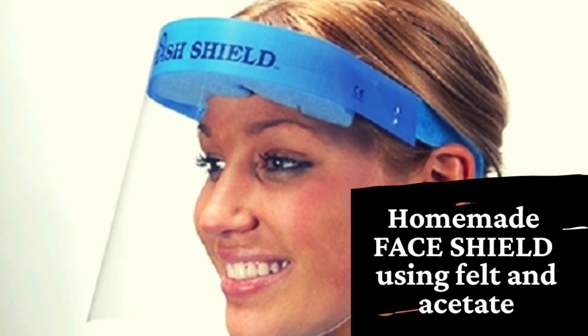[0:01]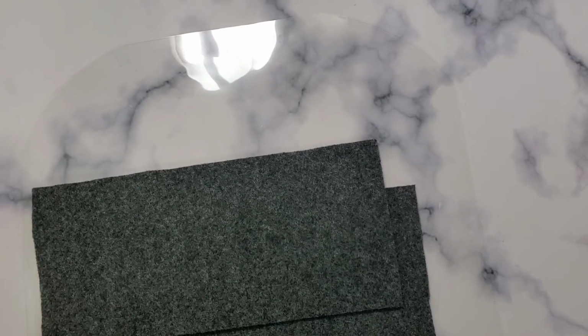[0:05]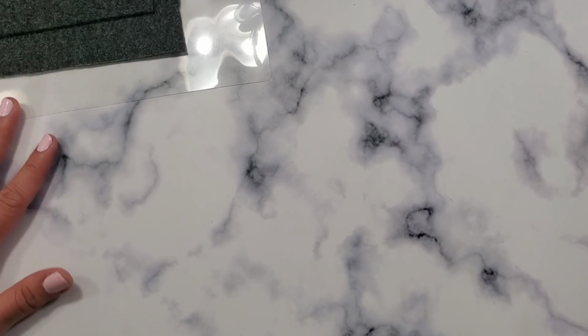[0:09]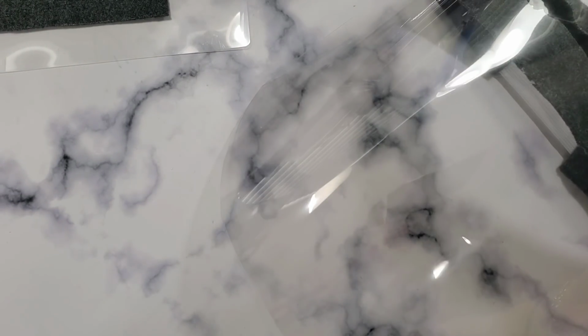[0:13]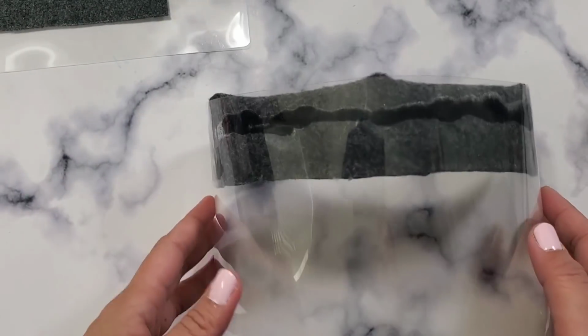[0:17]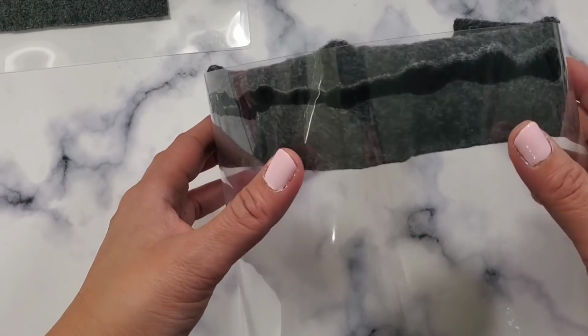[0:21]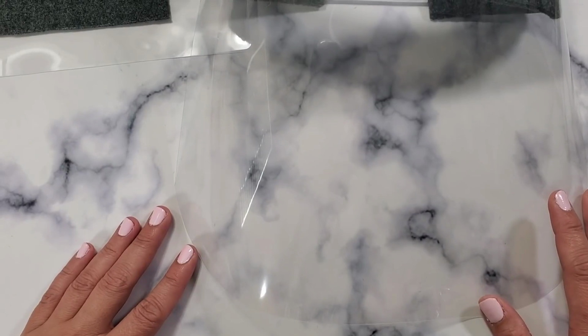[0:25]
Today, we are making a different kind of video. Not very crafty, but I think this is essential for us to know how to make. So we're gonna be making face shields. I know we ran out of face shields in my hospital, and some of you nurses who want to create your own face shield, we're gonna be doing that today.
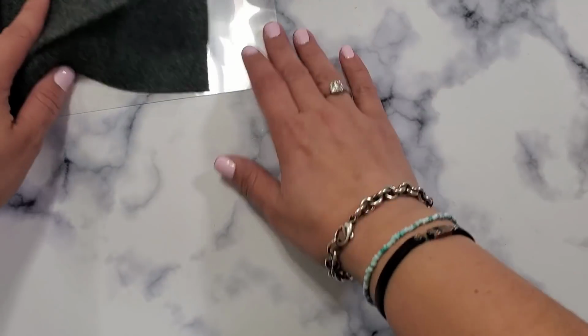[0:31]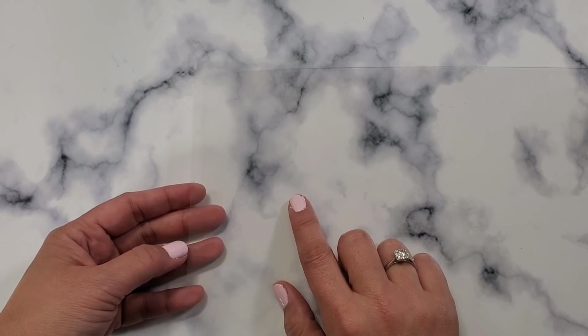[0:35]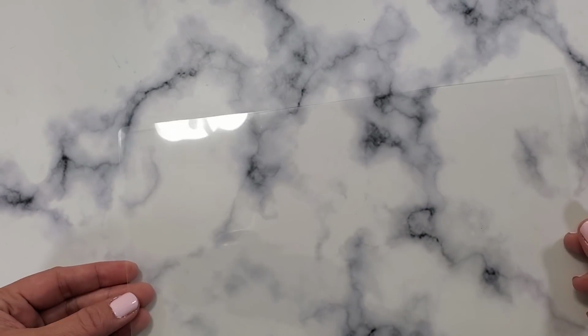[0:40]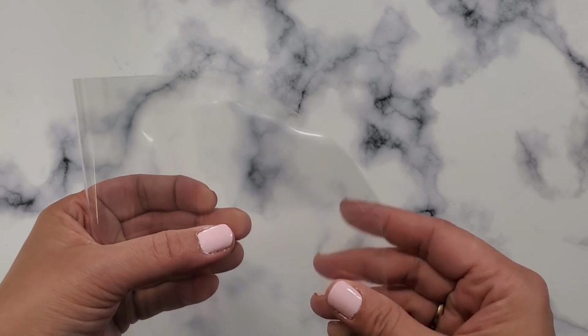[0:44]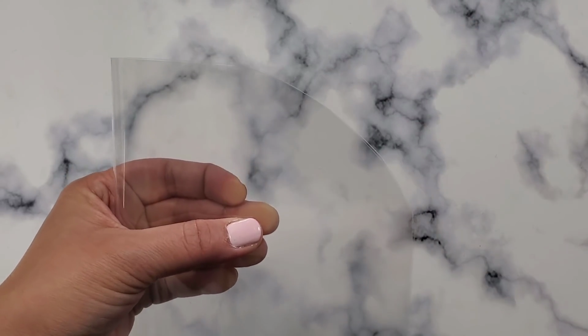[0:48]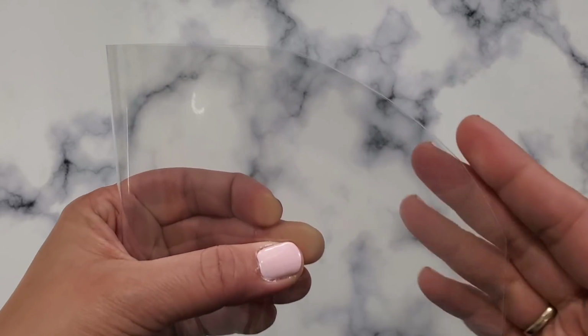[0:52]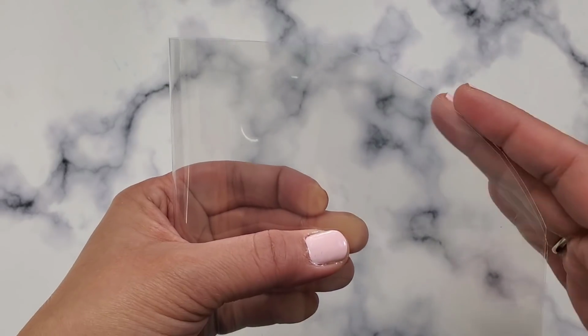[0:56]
So you're going to be needing acetate sheet. This is an acetate sheet. 5 mil is recommended because it's thicker. And then go ahead and laminate that. And then after you laminate it, make this curve right here. Just manually cut it on the curve just so it helps with the face, so it doesn't go to the side of your face or your t-shirt.
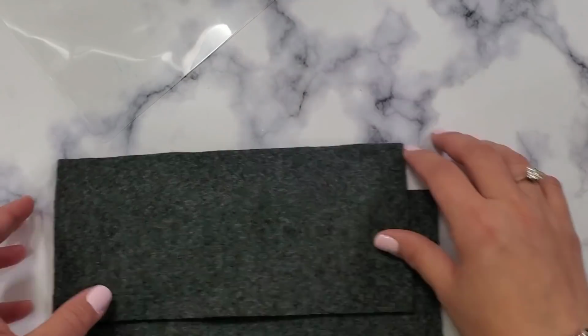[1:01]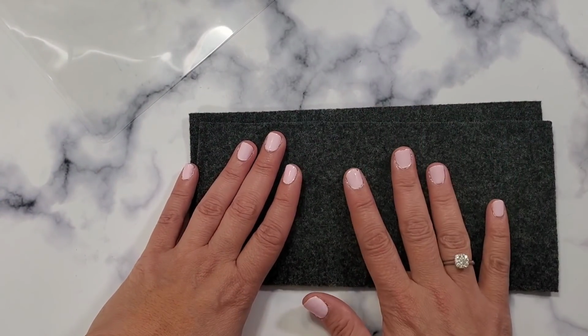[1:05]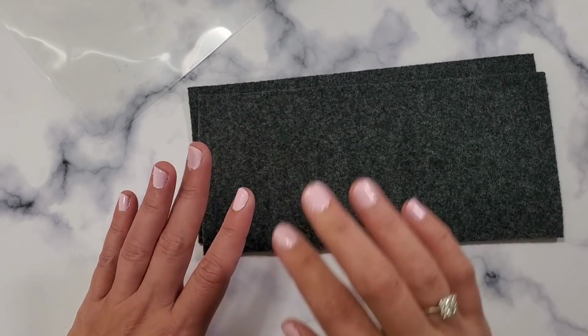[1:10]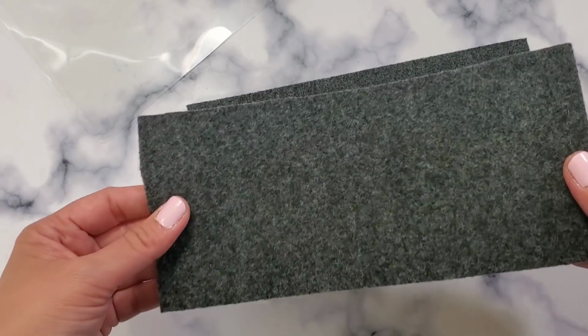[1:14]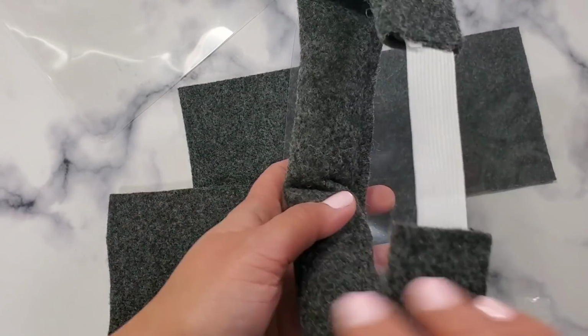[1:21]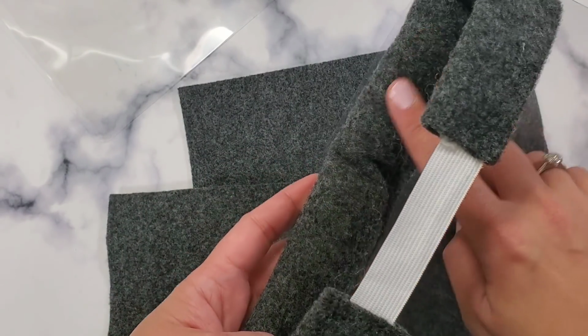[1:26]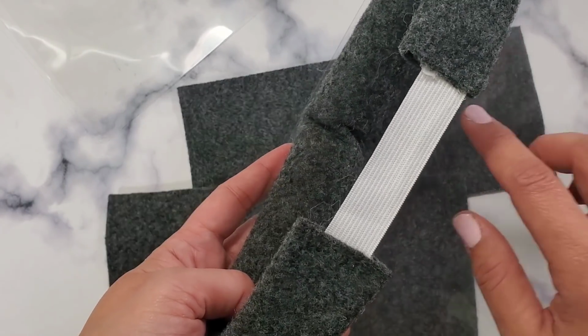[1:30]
And then you're going to be needing 2 felts. This is the material that I have right now. I don't have the luxury of getting picky with the materials. This is what I have at home, so this is what I used. So this is 2 sheets of 4 by 9. One of the sheets we will be using, because there's 2 parts here. One is this one that we're going to put fluff in, so that when it holds onto the head, you have the distance from the mask and it allows your nose.
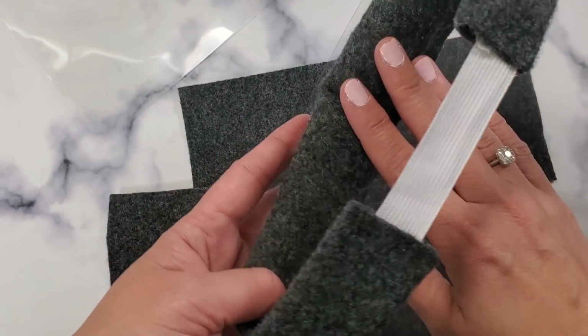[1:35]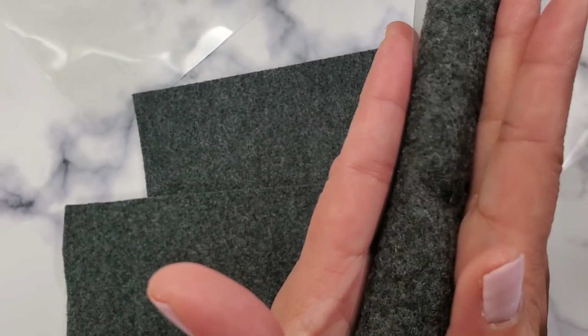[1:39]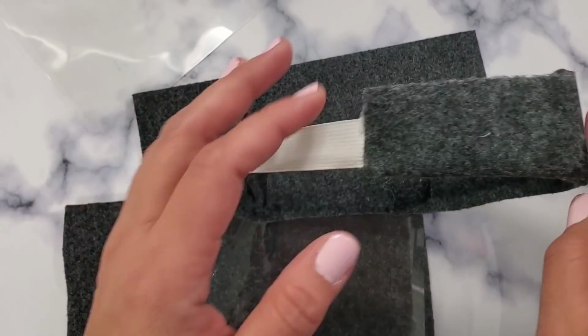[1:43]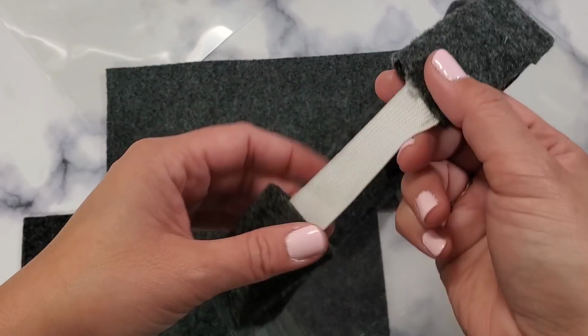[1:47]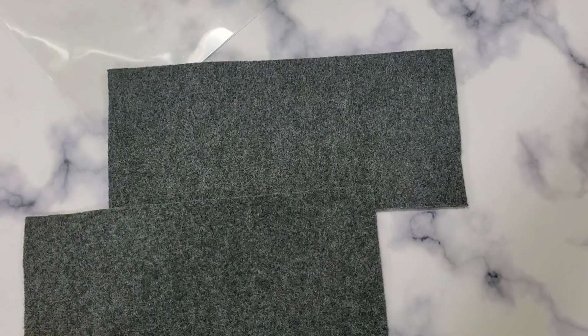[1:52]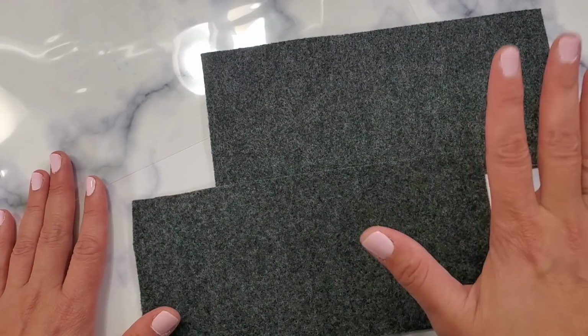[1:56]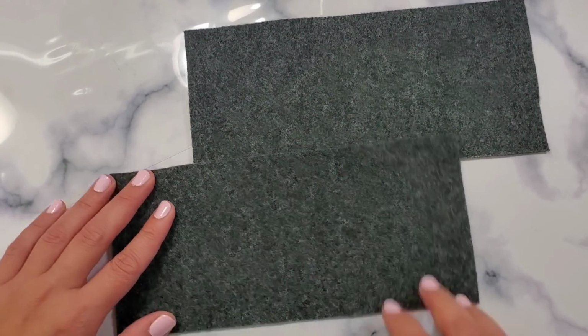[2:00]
So you need this to have fluff in it. So that's what we're doing. We're just doing the minimum. And then after that, the other part would be this one that holds the garter. So we're going to be doing that today. You don't have to know how to sew. We're gonna just use a basic glue gun because I think everybody has access to a glue gun. So let's do that right now.
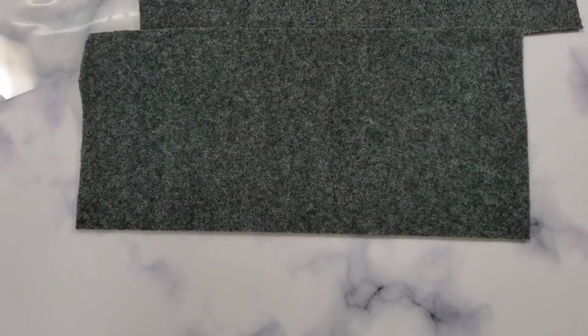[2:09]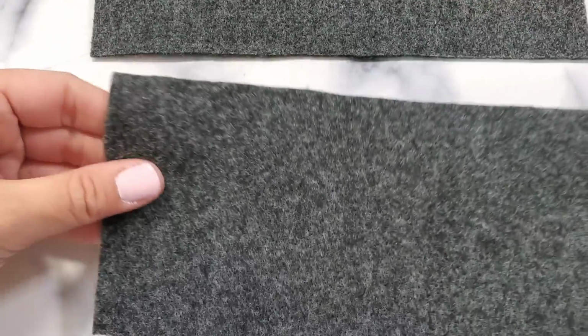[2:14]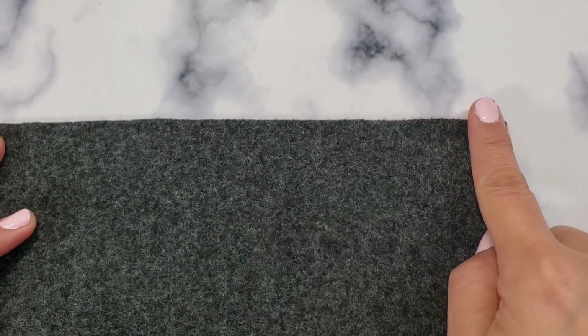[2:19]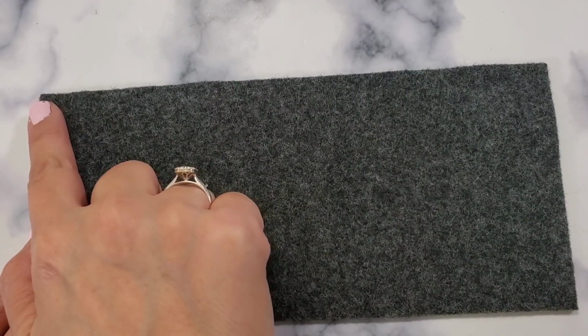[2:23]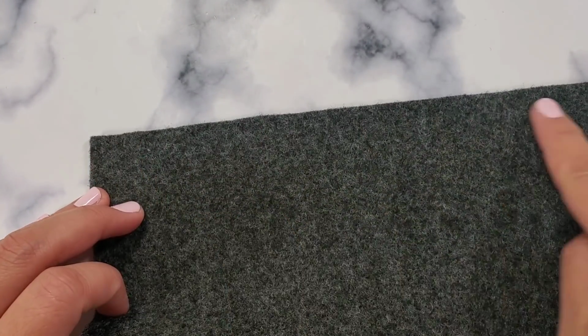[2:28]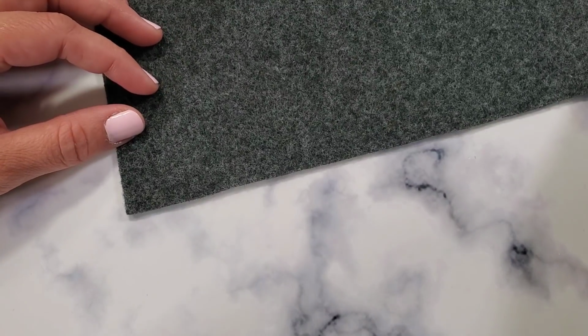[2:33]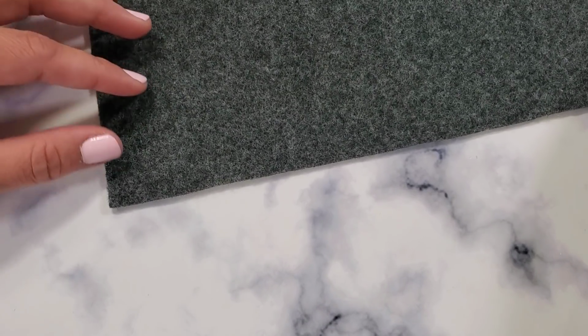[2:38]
We're gonna start with, this is the 4 by 8, right? Let me move you a little bit closer so you can see what I'm doing. So this is your 4 by 8 sheet, 4 by 9, sorry. This is 9 and this is 4 inches. So what I need for you to do is close this up just like this, and then you're gonna put your glue right here. So we're gonna do that right now just so you can see what I'm doing, and then you can do this if your hospital runs out of face shields. You can easily do this.
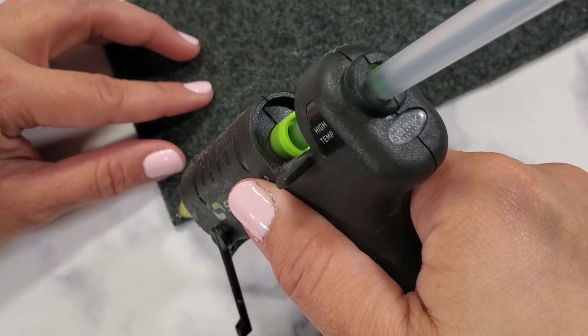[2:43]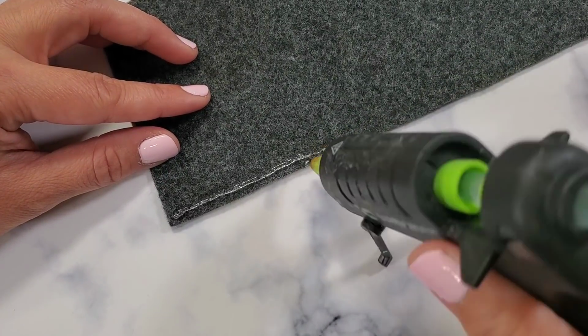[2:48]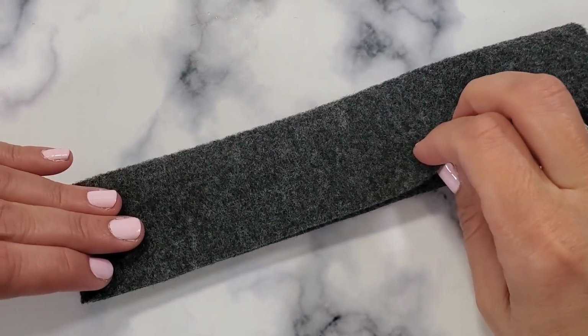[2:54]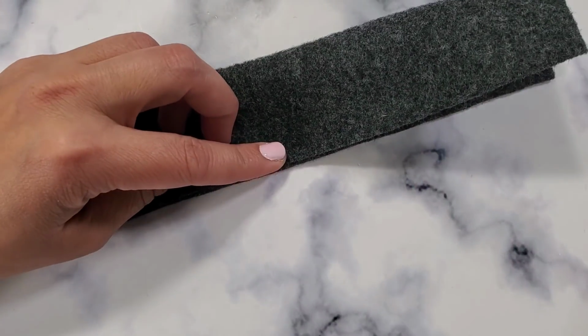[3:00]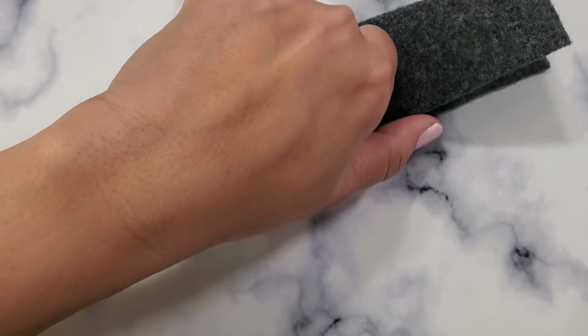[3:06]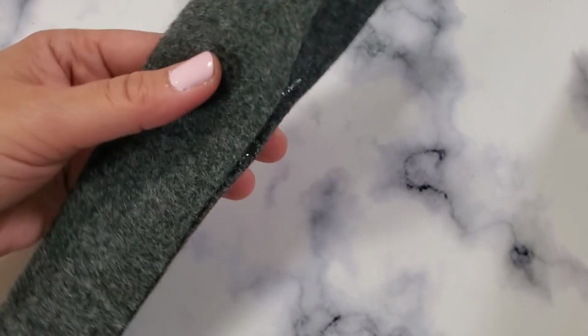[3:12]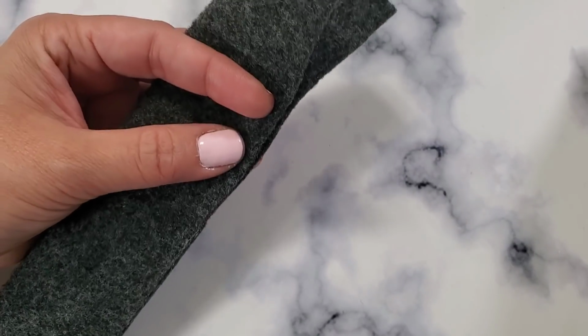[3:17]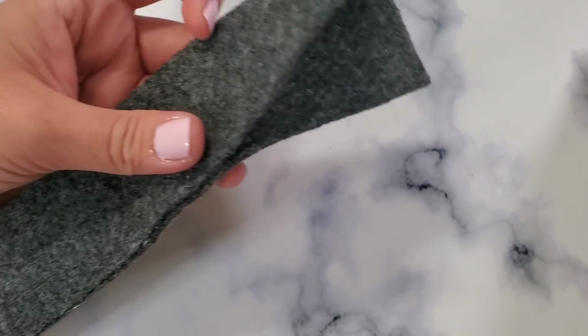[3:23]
All you need is glue gun, felt, garter, fluff, and acetate. I know that sounds a lot, but I think in times of crisis, we have to be quite resourceful so that we can protect ourselves. So for some of you guys who don't know, the face shield, you need it so that you can protect your eyes from the droplet. So the masks protect your nose and protects you from breathing in the virus. But the mask doesn't protect your eyes, and you can still get the virus in your eyes. So this face shield helps you with that.
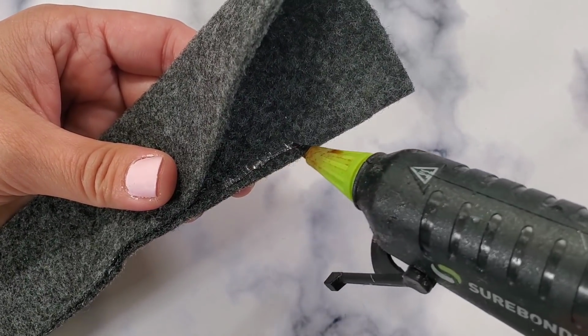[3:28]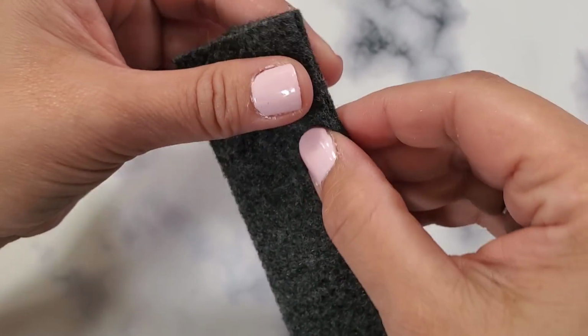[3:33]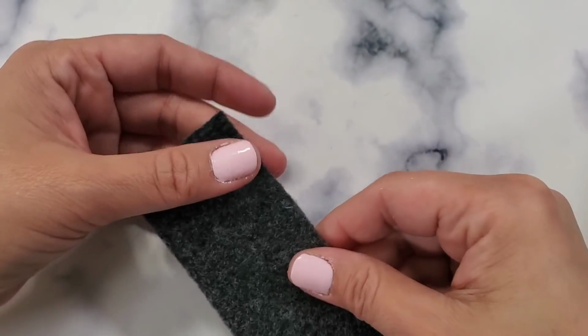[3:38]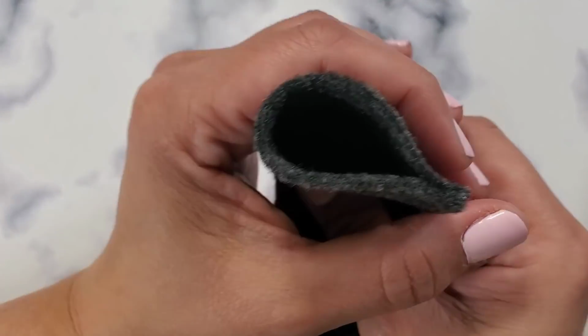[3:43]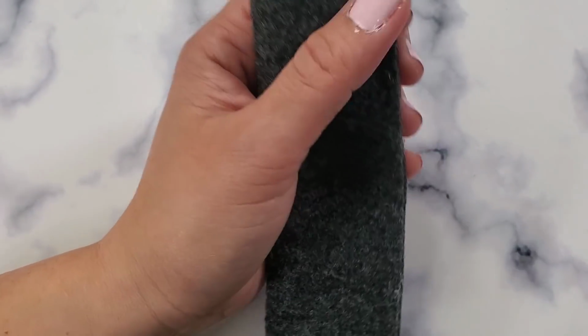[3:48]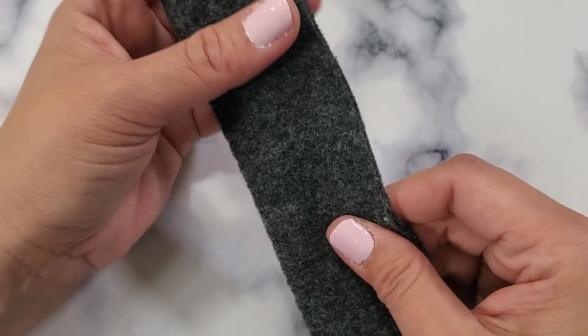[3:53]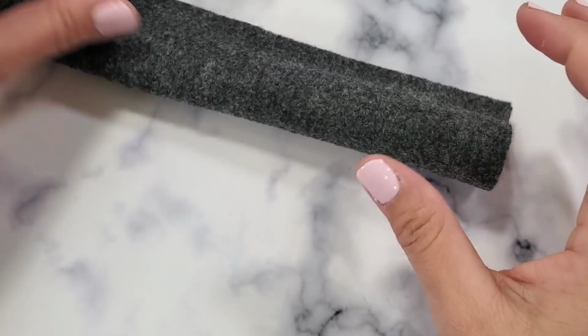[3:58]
So this is what we use at work. So you're gonna close it with a glue gun. You can sew this too, guys. It's up to you. But I'm just doing it for those people who don't have access to a sewing machine, who don't know how to sew. So now that you've closed that up, you're gonna see there's a space, and that's where you put your pillow fluff. It doesn't have to be pillow fluff. You can use cotton or anything that would make it a little bit bulky, because that helps create the distance.
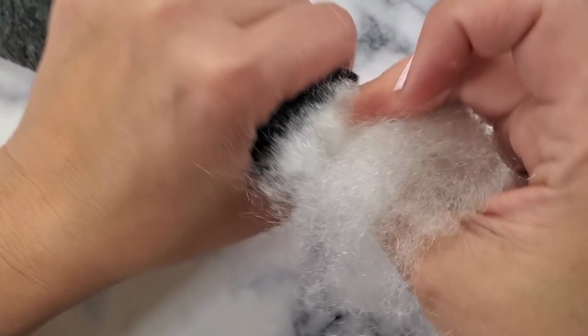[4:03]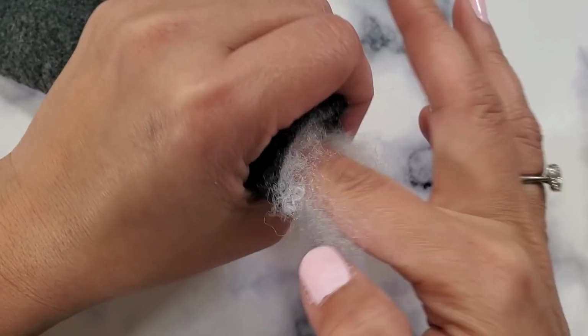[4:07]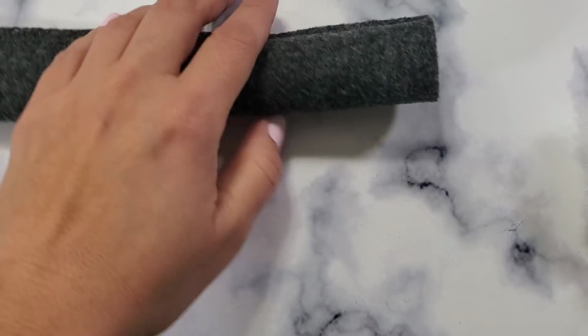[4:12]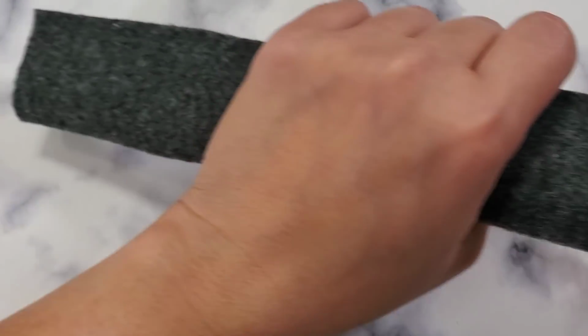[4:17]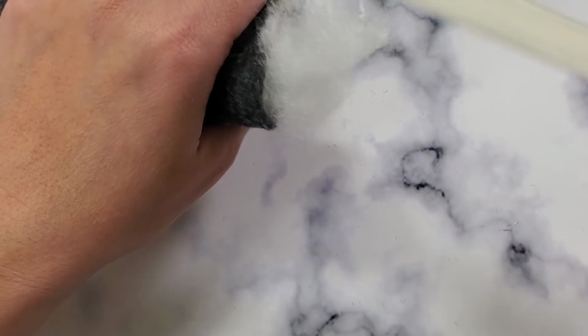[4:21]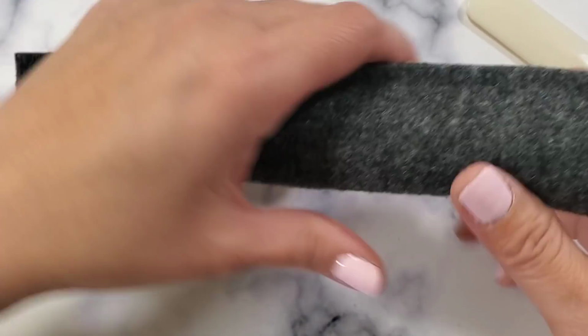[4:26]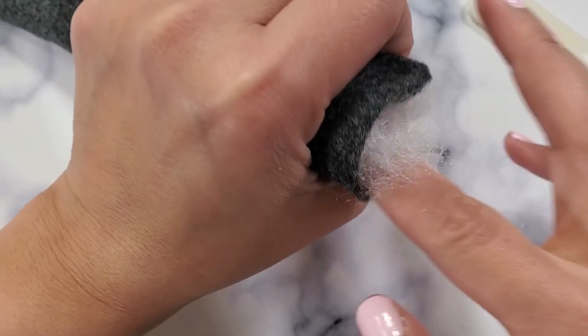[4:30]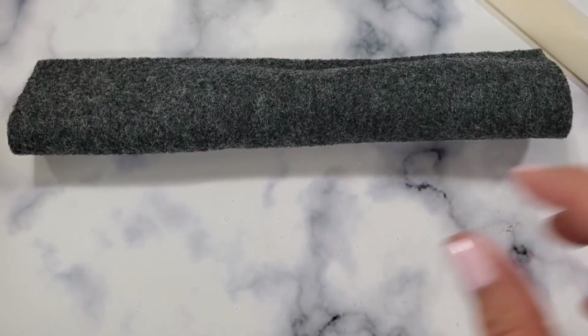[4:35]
So we're gonna fill it right here. So we're just gonna mildly put it inside. I use like a paper straw or anything that's long enough. So you don't have to fill it super tight. Just enough for it to give it a little bit of bulk so that it accommodates your face.
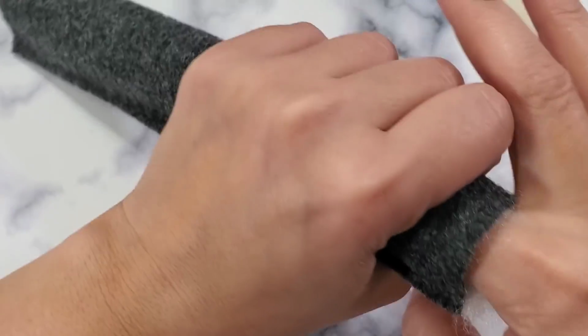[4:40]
So sorry, my kids are kind of noisy. They're playing downstairs.
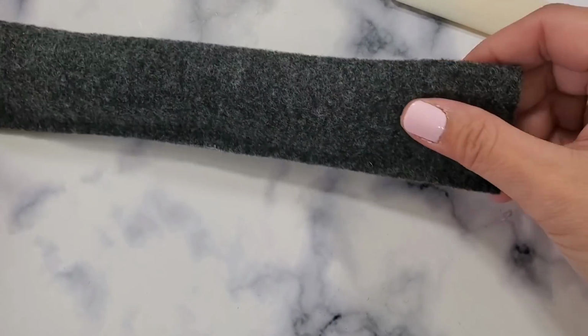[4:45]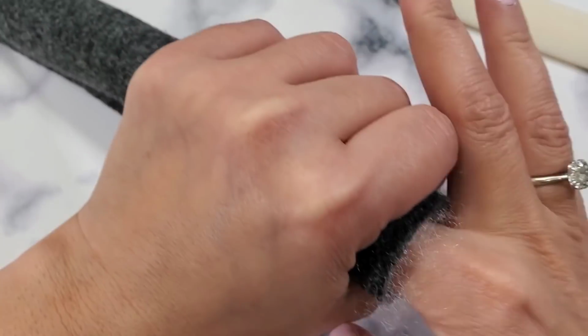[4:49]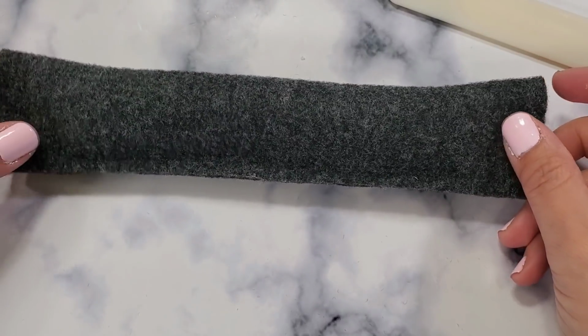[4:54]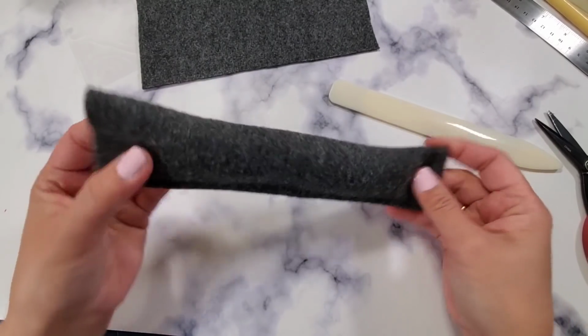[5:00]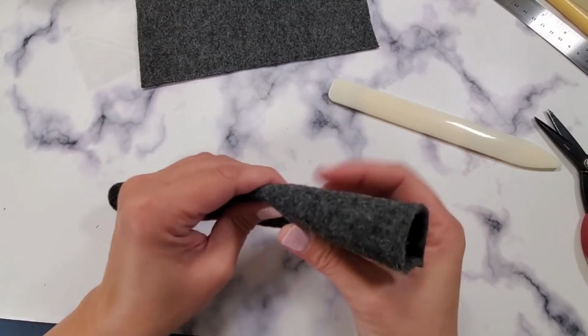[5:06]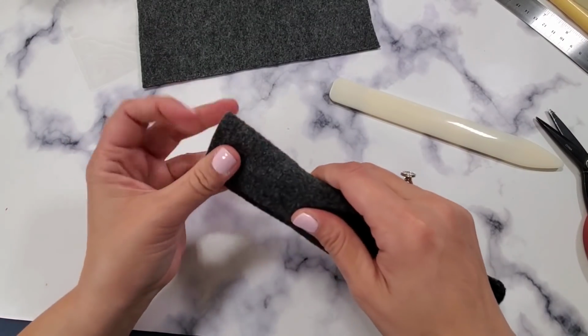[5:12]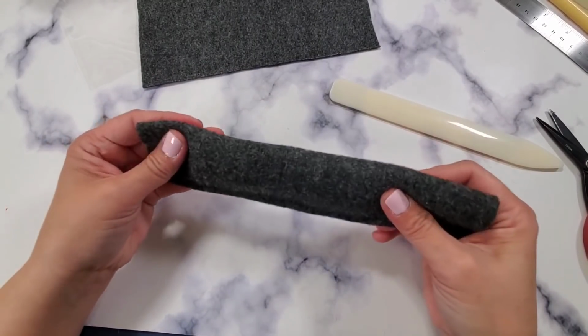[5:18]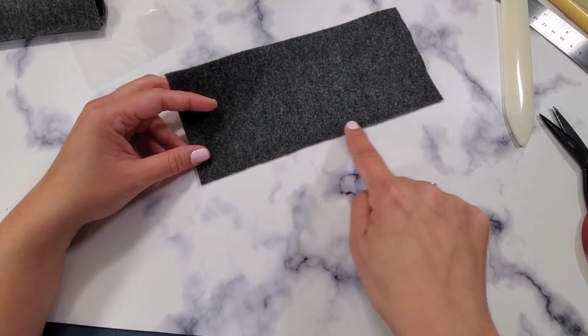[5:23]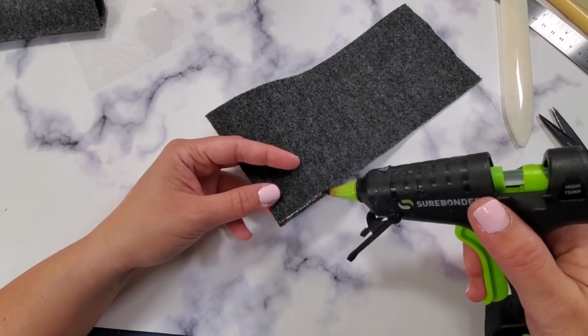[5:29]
So now that we kind of filled it, can you see that? Here, let me move you a little bit farther away. So now that we filled that a little bit, I can feel that the fluff is here. And then make sure that you distribute it properly. Okay. All right. So now that's done. You've moderately filled it. The next one, you're going to go to your next one and then do the same thing. Put glue right here, glue gun or sew right here. Because this is where we're going to attach the garter.
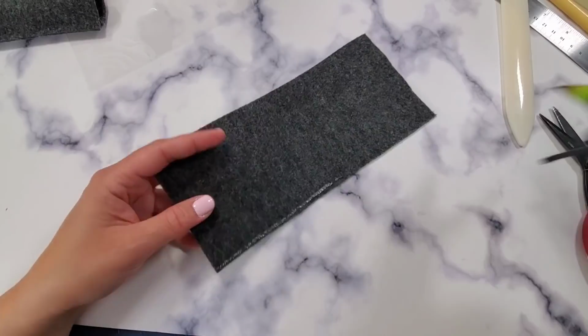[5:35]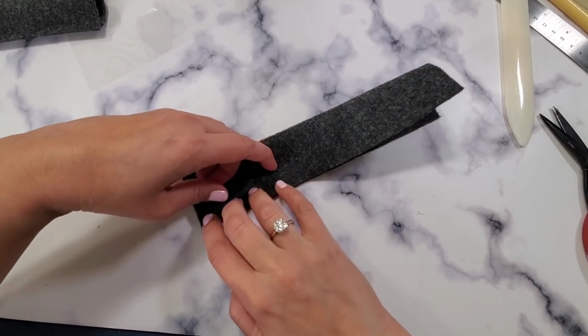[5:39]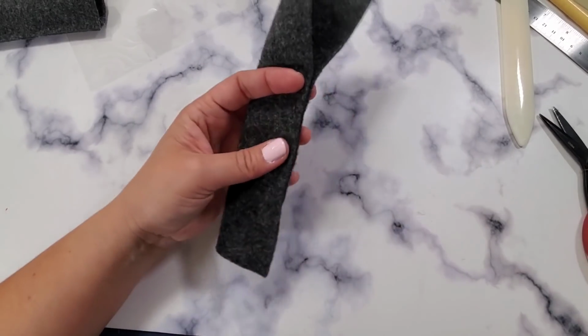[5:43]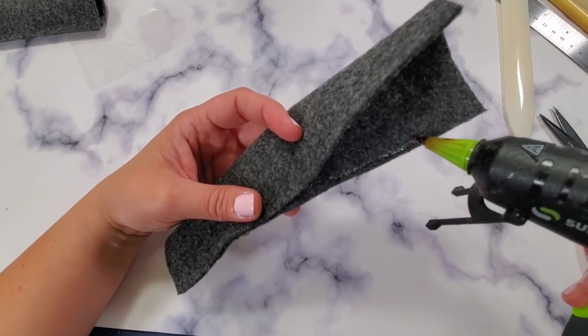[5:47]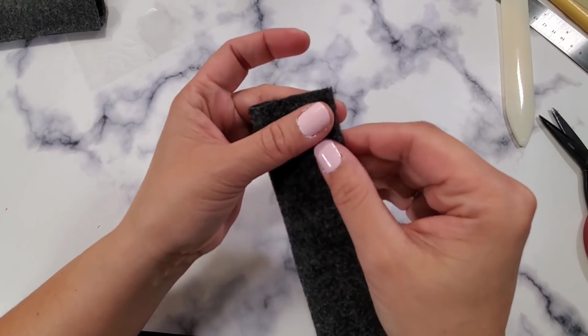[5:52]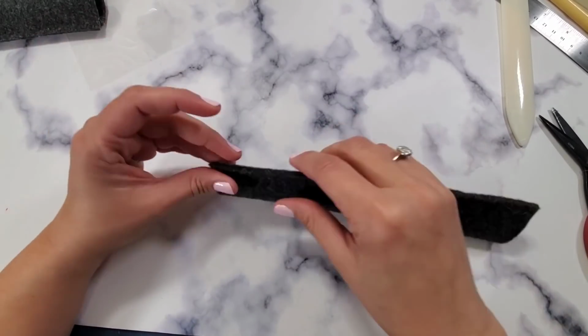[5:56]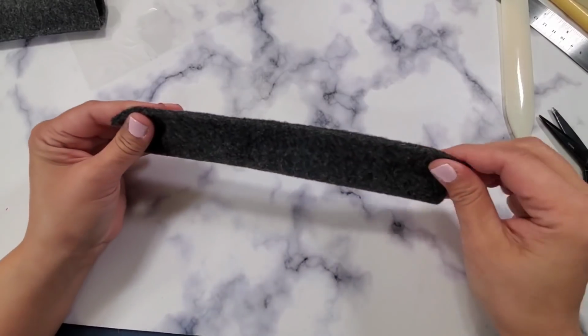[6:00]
So as you can see, I'm just closing it up with a glue gun. You can definitely sew this, but if you are making this in your hospital, I don't think you have a sewing machine, and a glue gun is a little bit more convenient to carry with you in your bag when you go to work. This is worst case scenario, guys. If your hospital runs out of face shields, you can definitely create your own using acetate sheet.
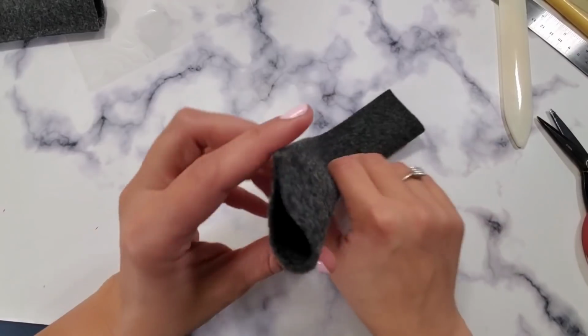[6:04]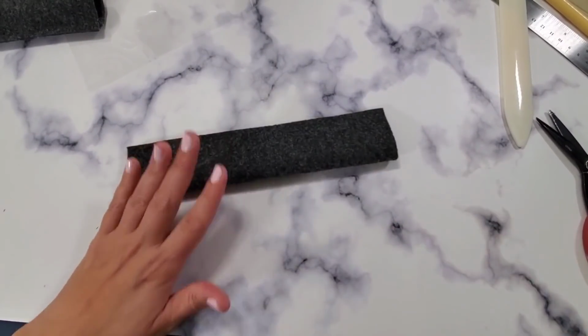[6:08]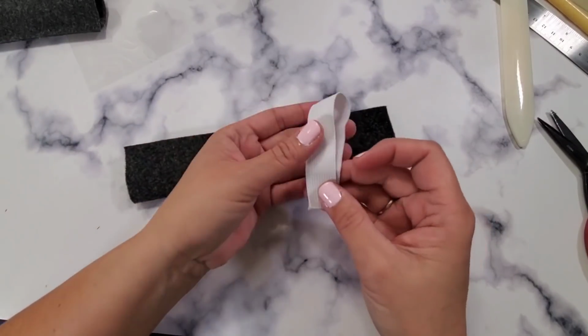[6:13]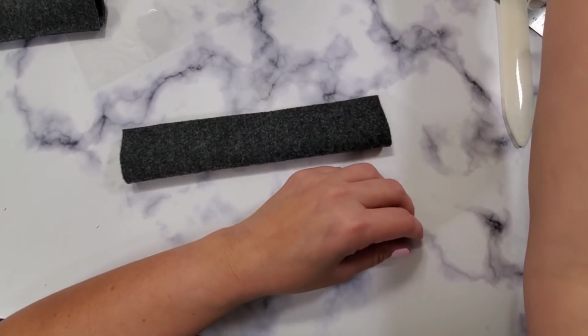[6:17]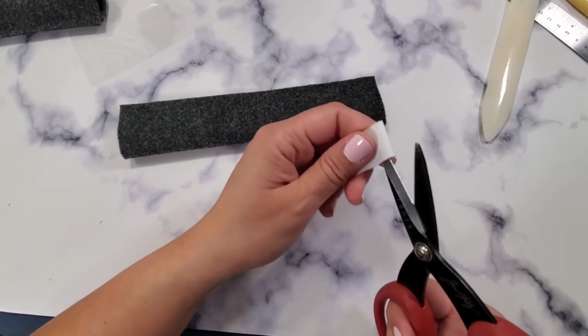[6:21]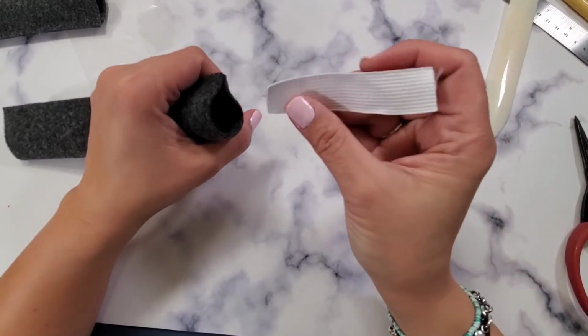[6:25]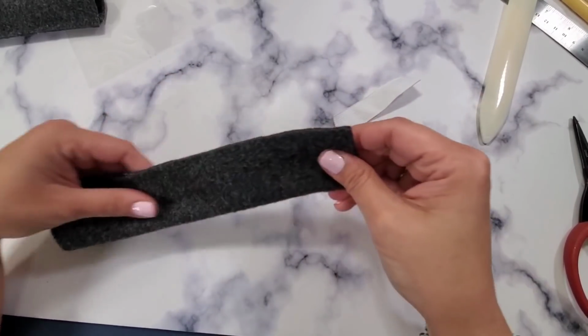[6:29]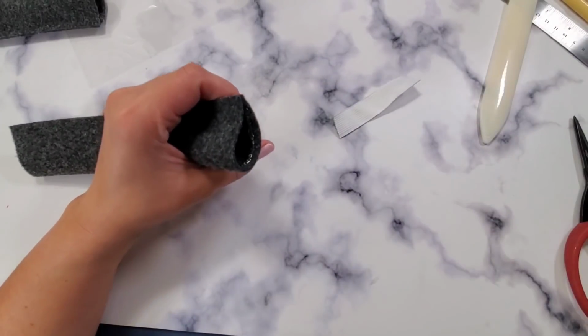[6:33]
So now that's closed, same as before, right? Now we're going to put a garter. So the garter is dependent on, I'm just using, this is how much? This is probably 3 inches. So I'm just using 3 inches right there. So what I'm going to do is I'm going to insert it right here and close it up. That's it. So I'm putting the glue right here.
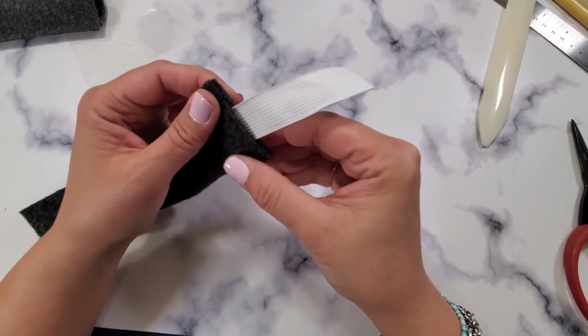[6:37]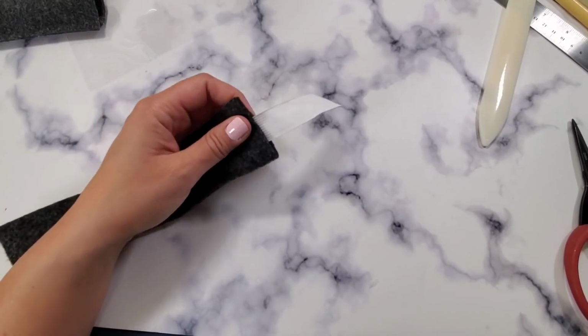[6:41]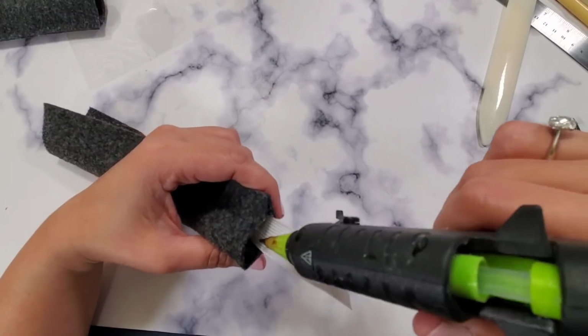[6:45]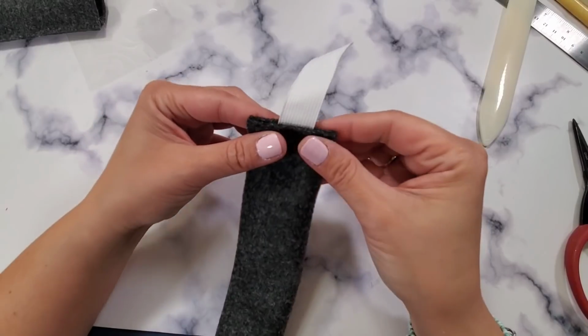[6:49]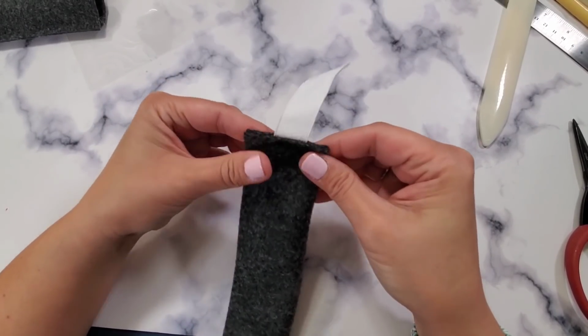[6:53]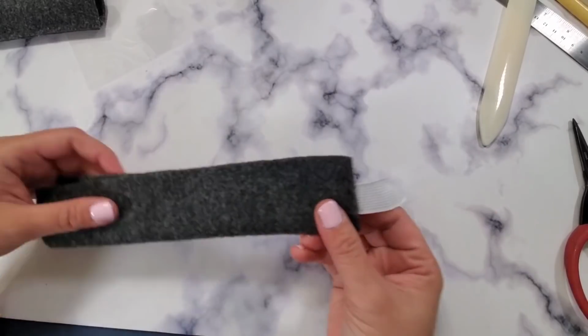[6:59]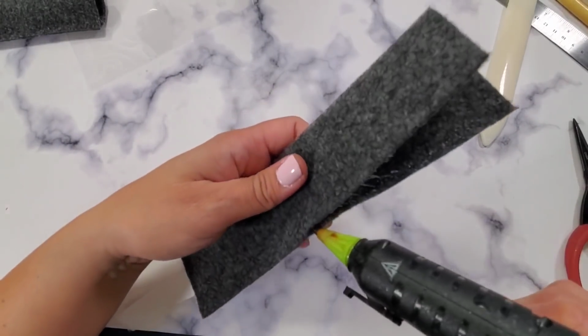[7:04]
This is just worst case scenario if your hospital runs out. It's good to know how to create things, because this will really be beneficial, since the nurses and doctors are still taking care of their patients. Regardless of the availability of PPE, we still gotta move on. We gotta take care of the people. So now that's done. Let me close this up.
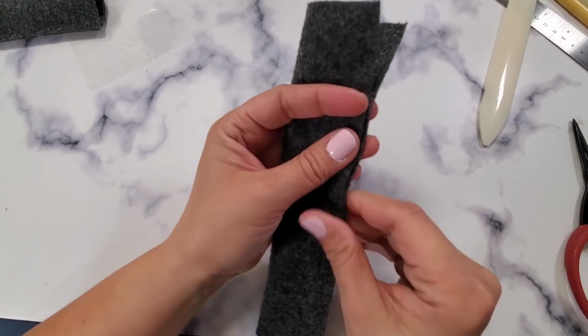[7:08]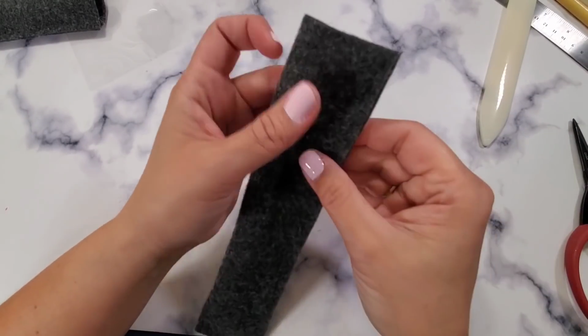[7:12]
Sorry guys, my kids are noisy and I'm making a video, so sorry about that.
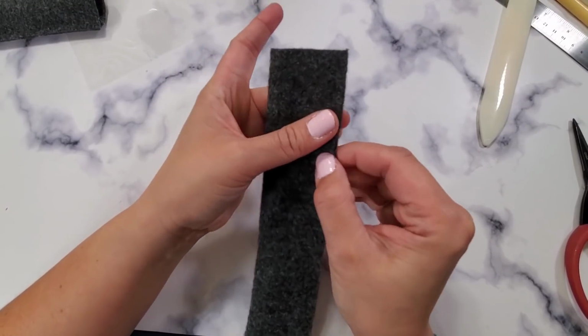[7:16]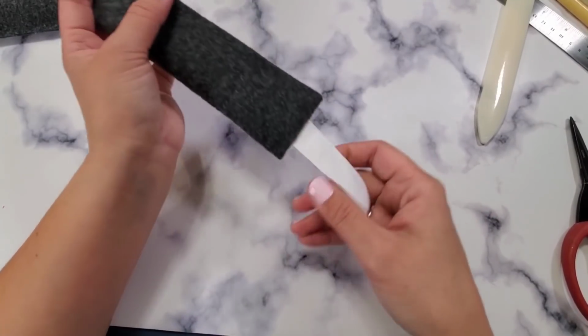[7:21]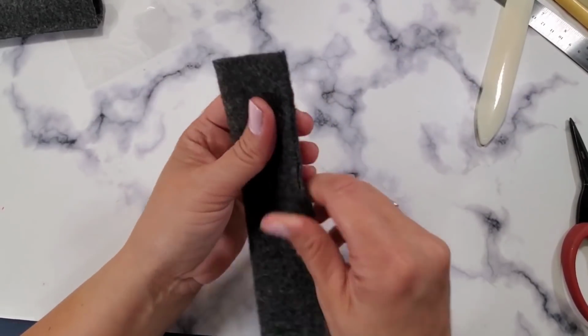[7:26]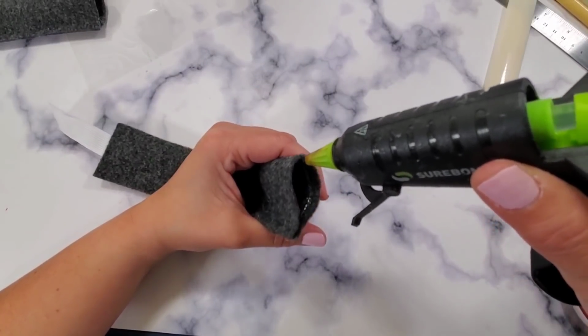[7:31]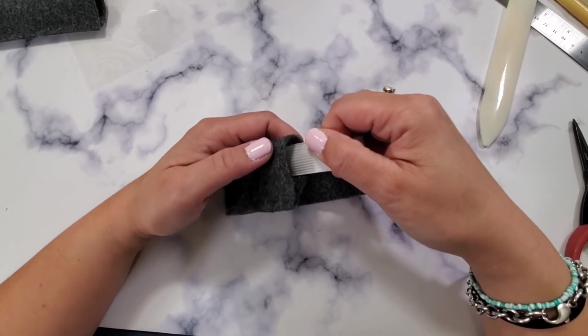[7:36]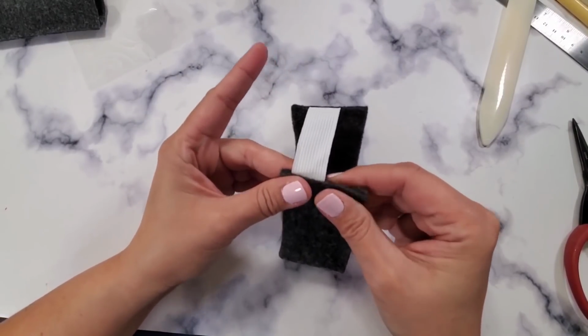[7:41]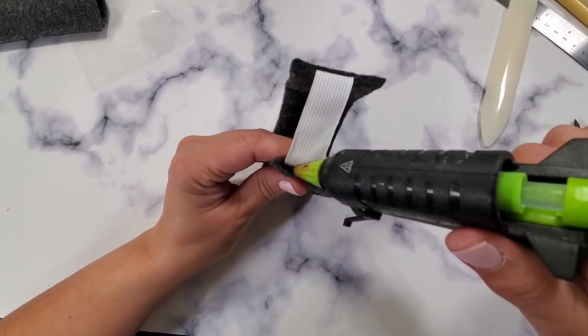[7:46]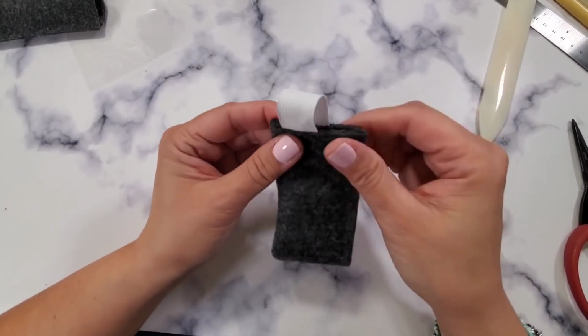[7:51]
So I'm just gluing that and closing the entire thing up. So now we're going to connect it to the other side. Make sure that it's closed. So you're going to put glue right here again. And then you put the garter inside and close it up. It's not super hot. And again, these are very minimal supplies that a lot of us have access to.
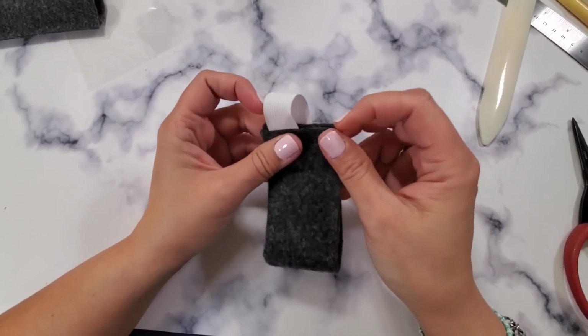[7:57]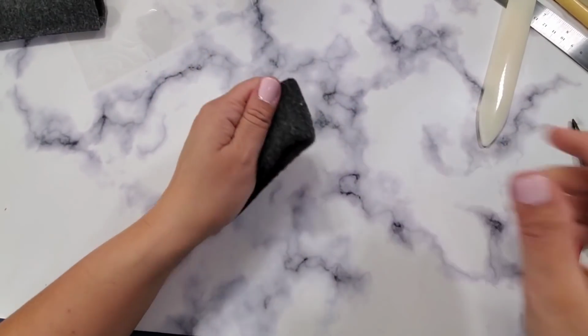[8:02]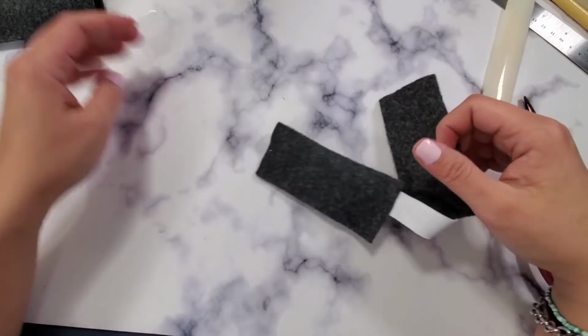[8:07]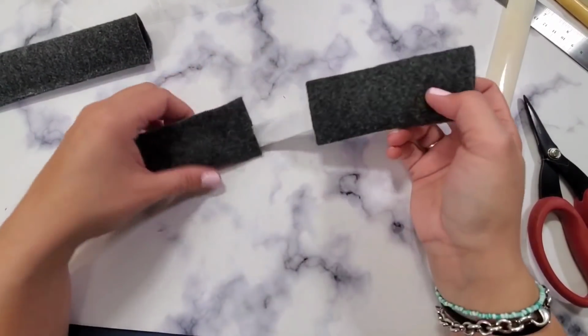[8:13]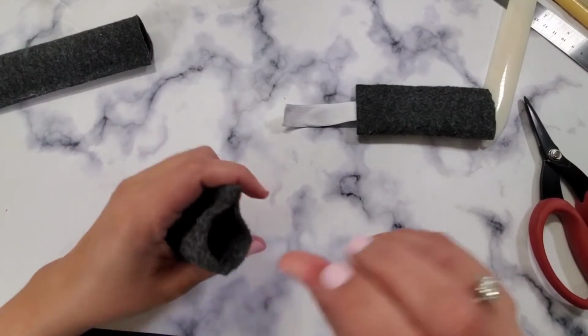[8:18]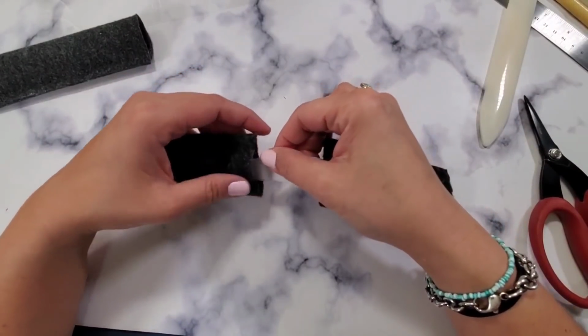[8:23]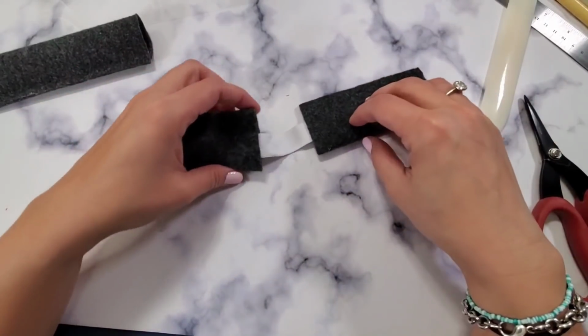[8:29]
Just a basic glue gun, garter, whatever felt, or I think felt is reasonable because it's sturdy. And then you cut this into half, because this is what you're going to attach to this side. So now that you have these, right, you have both of it, make sure that it's sturdy, make sure that it connects. You gotta test that out, because sometimes it's the quality of the felt. If you want to stitch this up, I would stitch this up if you have access to a sewing machine.
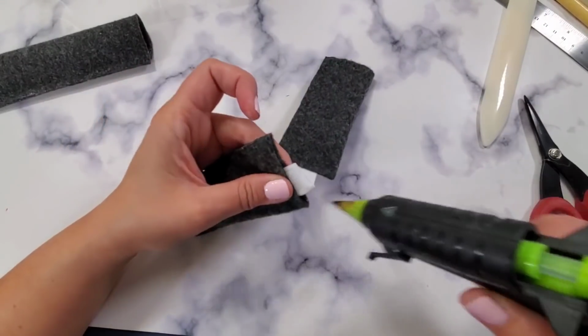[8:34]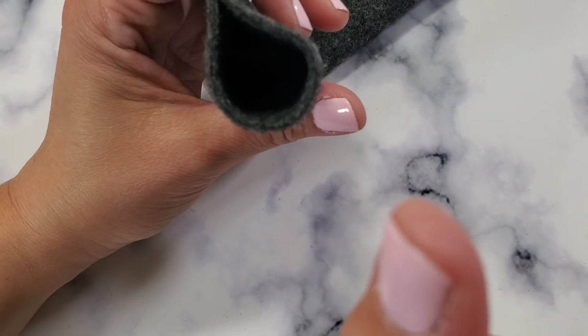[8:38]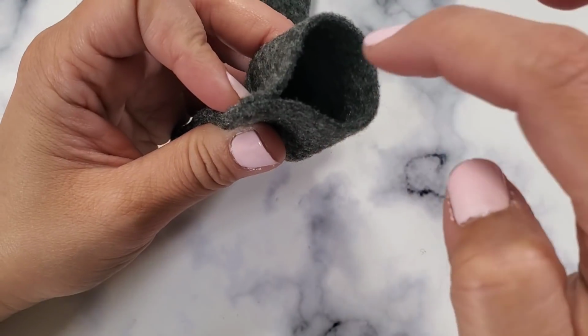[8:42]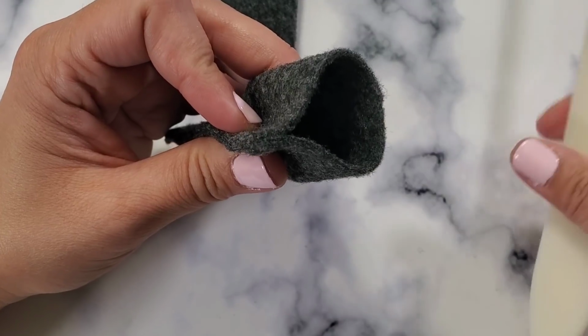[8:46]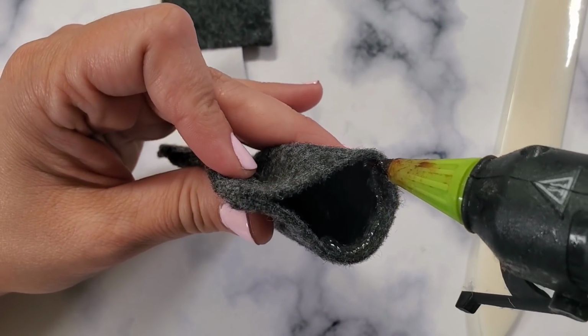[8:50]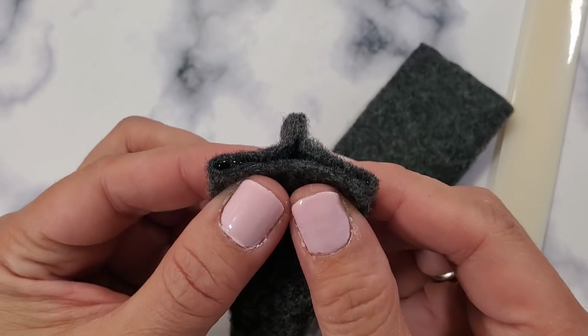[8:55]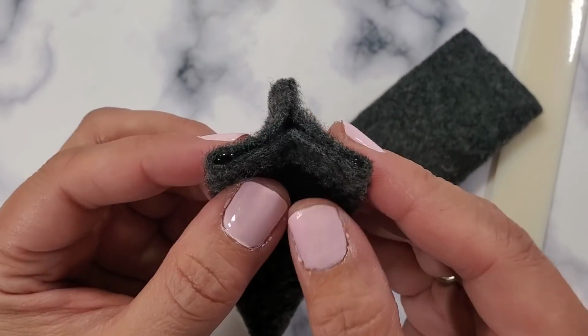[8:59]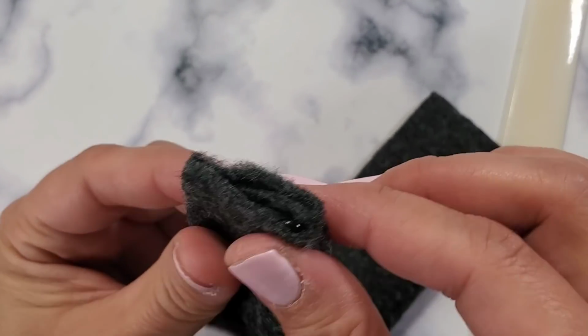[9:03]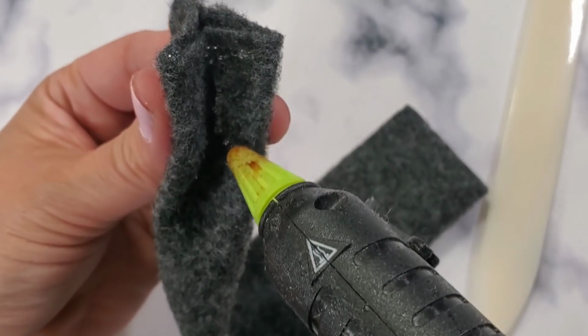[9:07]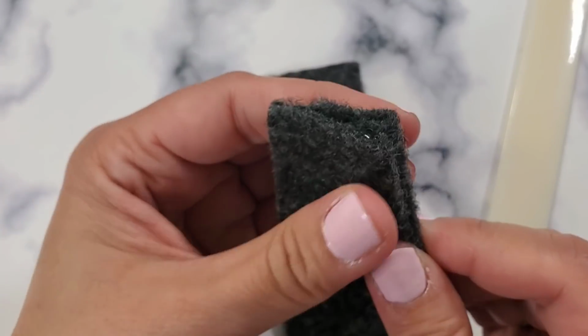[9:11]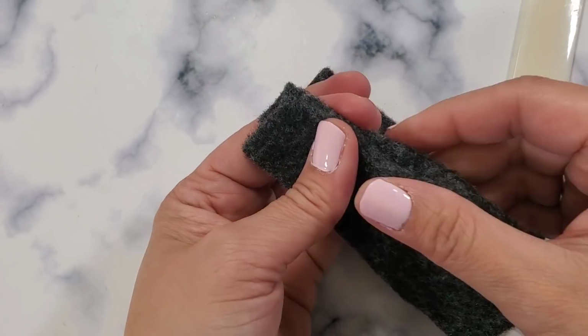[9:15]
Okay. So now you're gonna put glue. You're gonna put glue right here on half from here to here. And then you're gonna close it up like that. So it makes it a little bit more narrower, right? And then you're gonna glue it here to close it up just like that, so that you can easily insert it to the opening of the other one that has fluff in it. You see the angle? That's what we're trying to do, so it's easy to insert it right there.
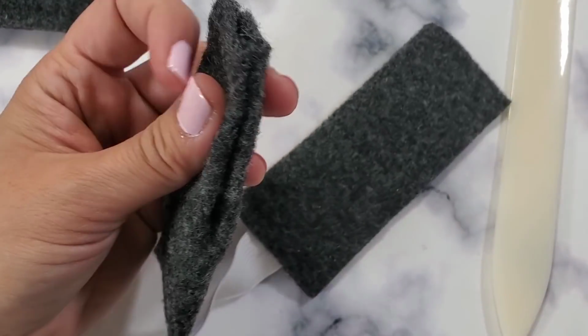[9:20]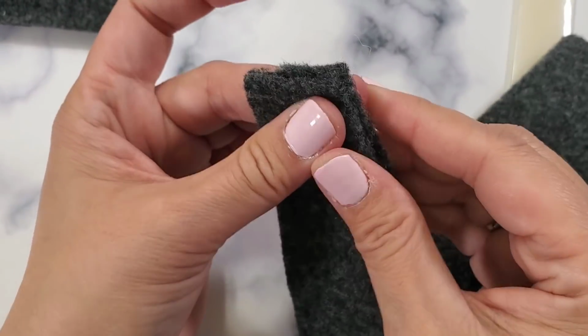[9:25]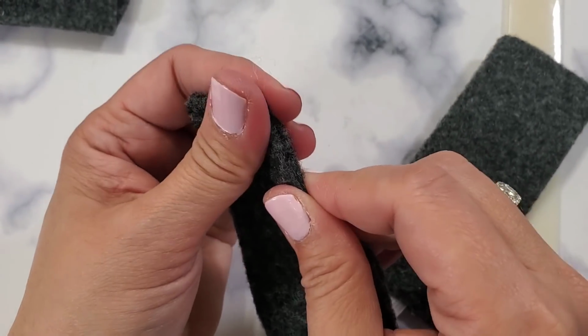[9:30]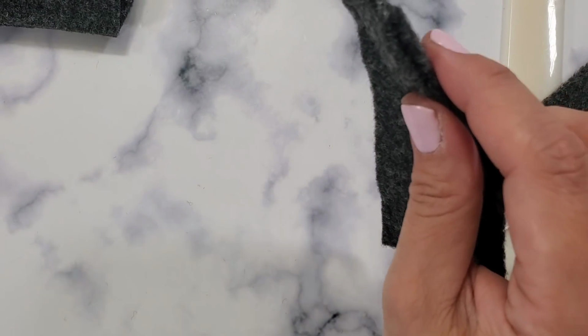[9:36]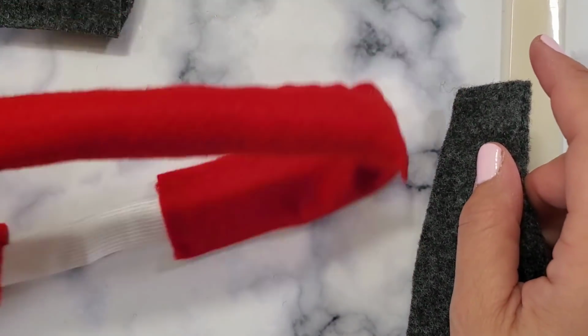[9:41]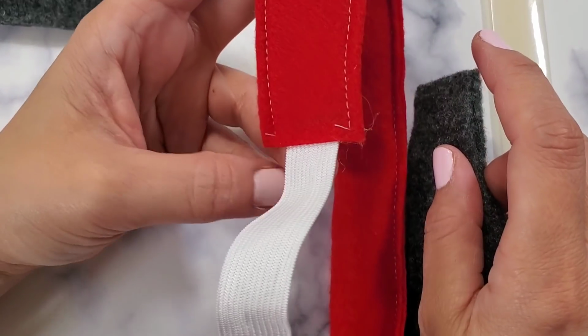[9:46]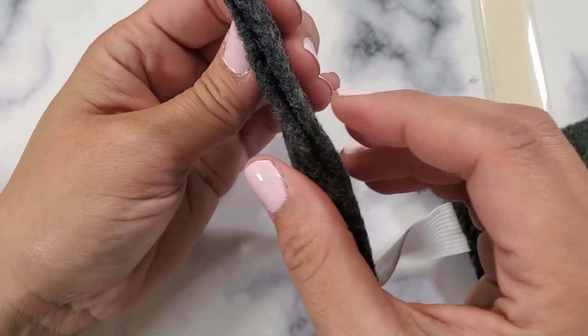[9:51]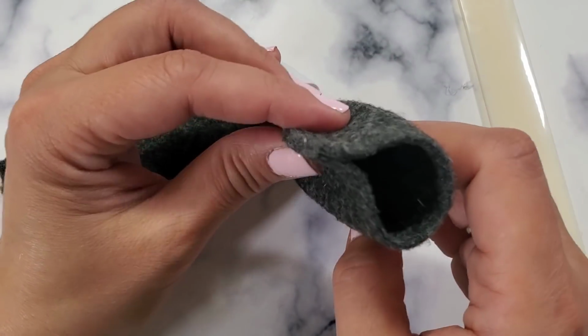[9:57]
When I was using a different kind of felt, it was easier, but this felt is a little thicker, so it really depends on the felt that you use. Unfortunately, my sewing machine broke and it wouldn't sew anymore, but this is what I was doing earlier. I was able to sew some of them like this to make it a little bit more sturdy, but we gotta use what we have. So now that's closed. We're gonna do the same thing for the other side.
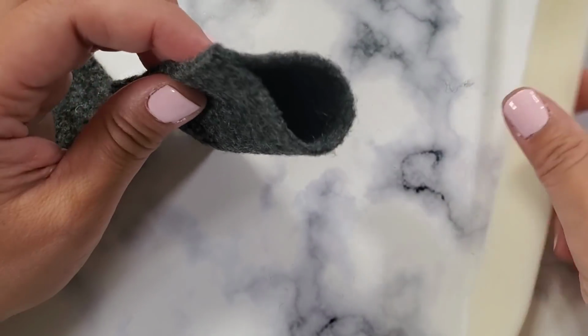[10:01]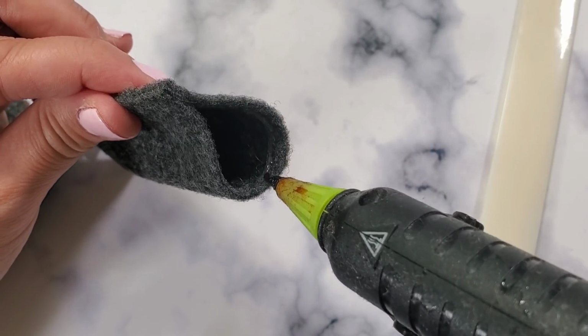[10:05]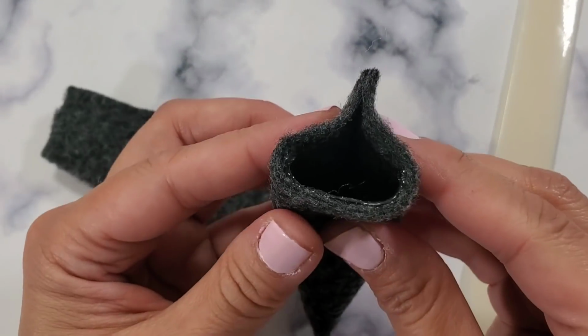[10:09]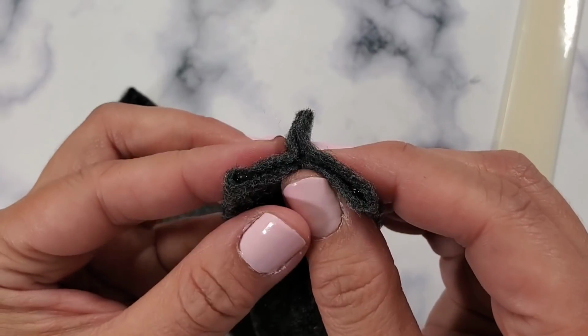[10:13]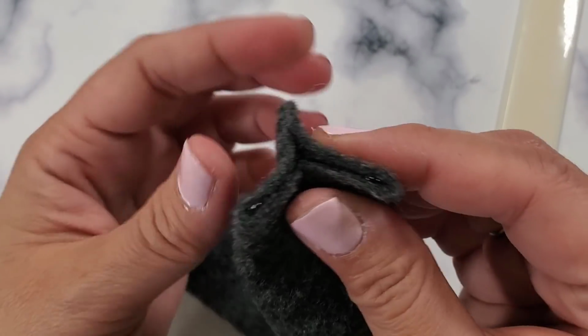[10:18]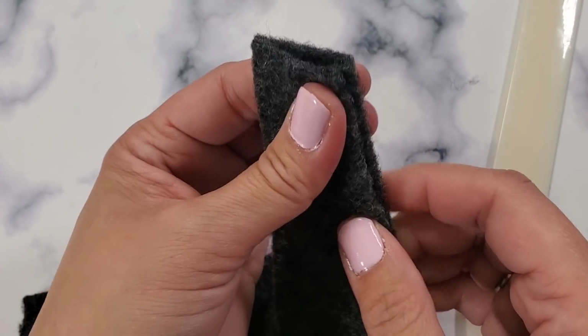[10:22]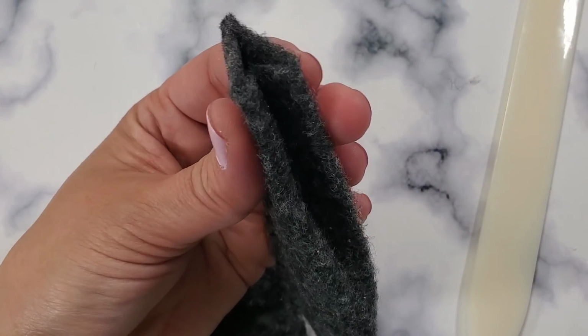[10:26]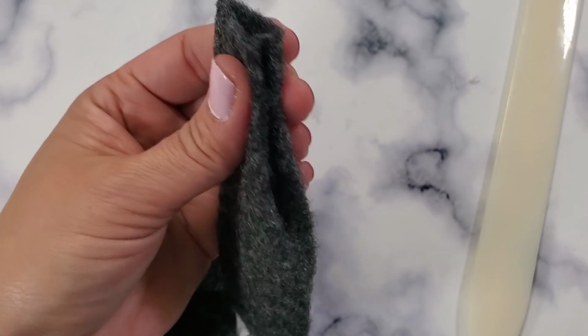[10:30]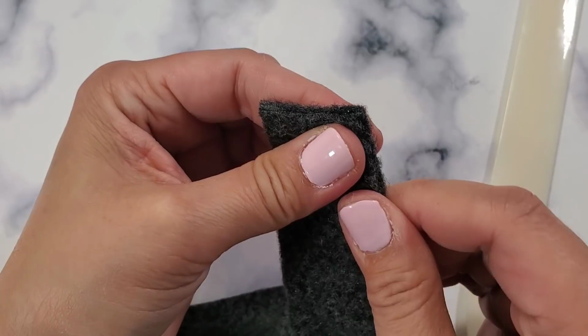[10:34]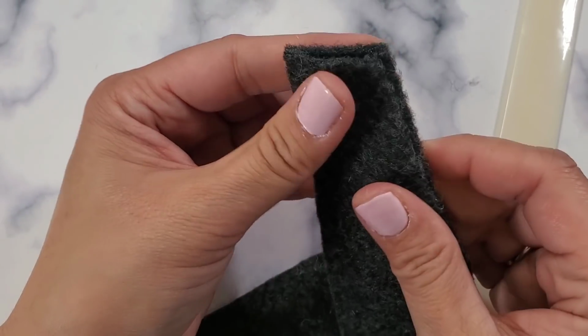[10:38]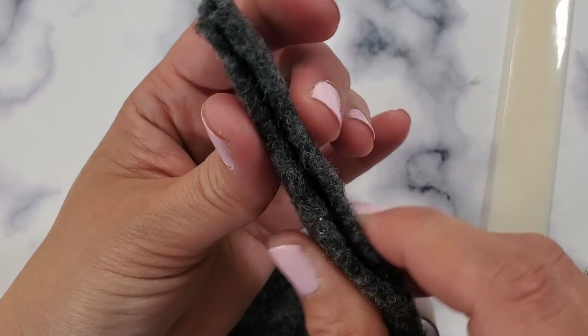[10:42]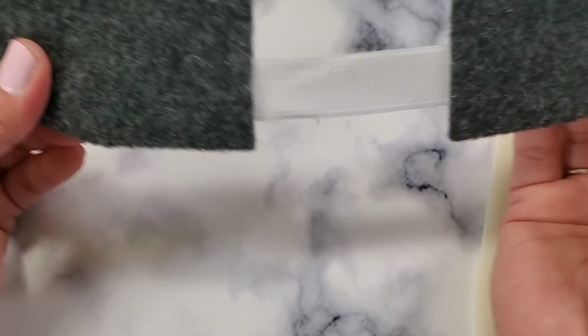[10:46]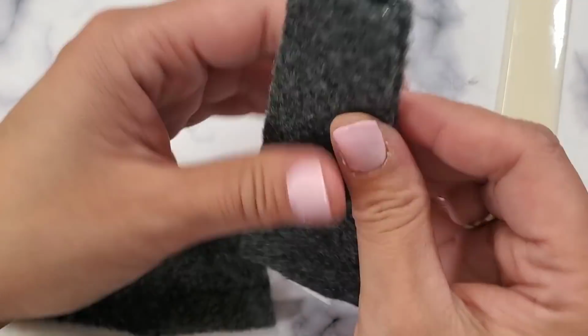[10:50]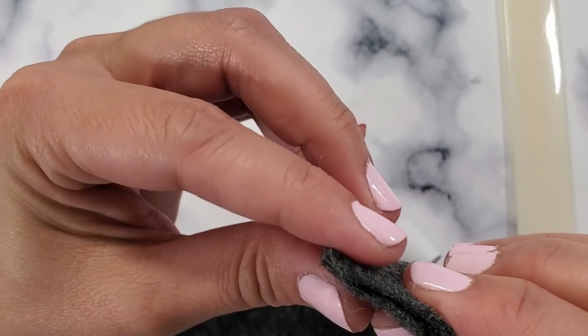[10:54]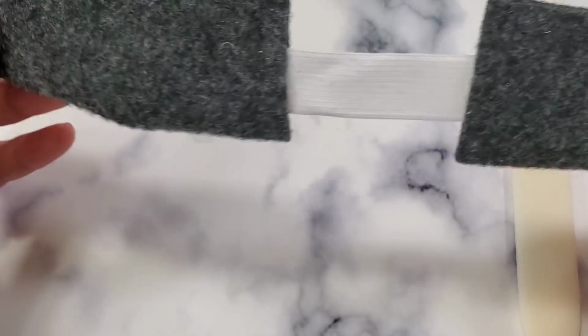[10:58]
So put your glue gun from here around up to here, half. Just like that. Okay. And then you close it just like that. And then you kind of fold it and kind of encourage it where it's supposed to go. So now you put glue right here so you can seal it up. Right there. I think it's holding. Okay, right there. So now that that's done, it's not necessary for you to close this. It doesn't matter.
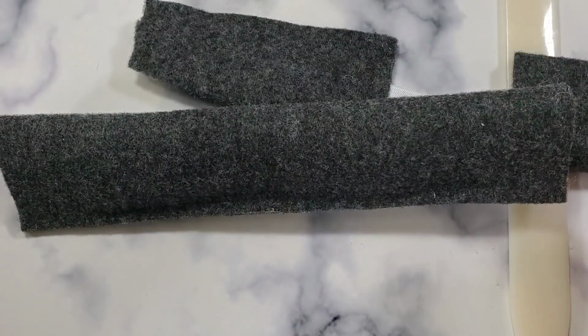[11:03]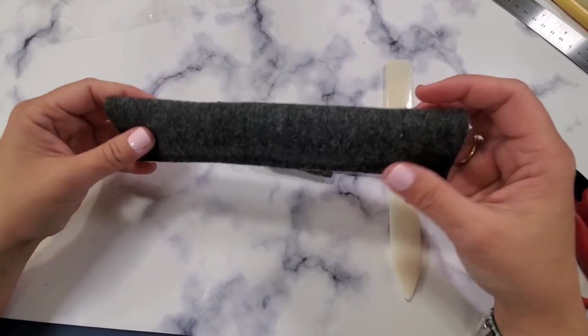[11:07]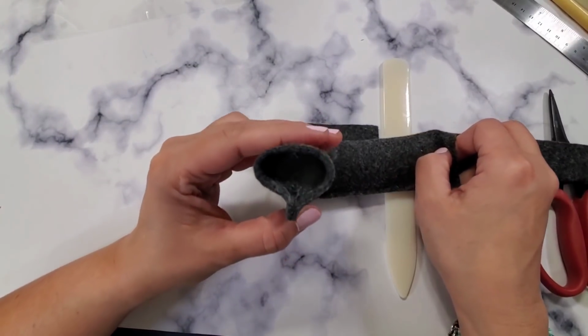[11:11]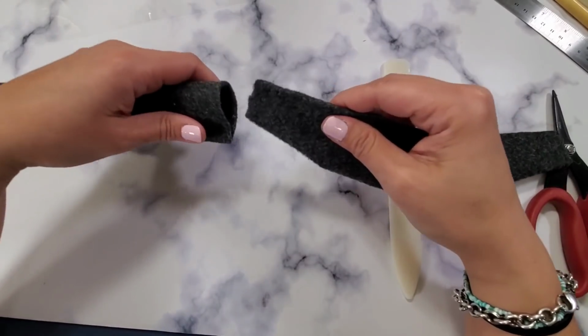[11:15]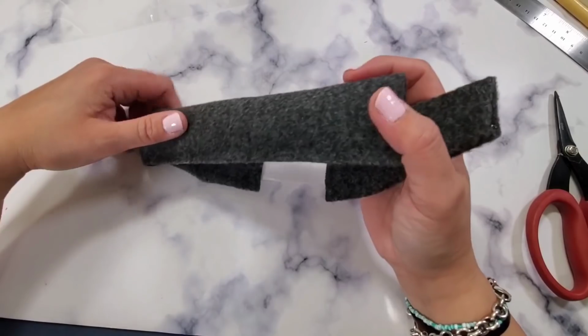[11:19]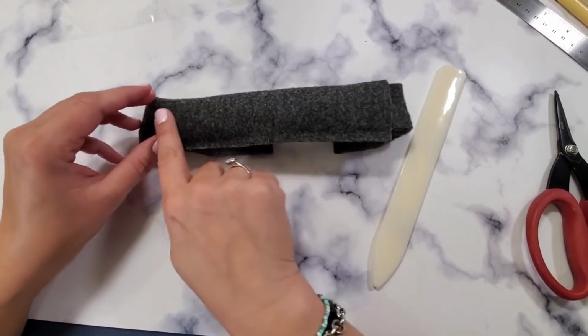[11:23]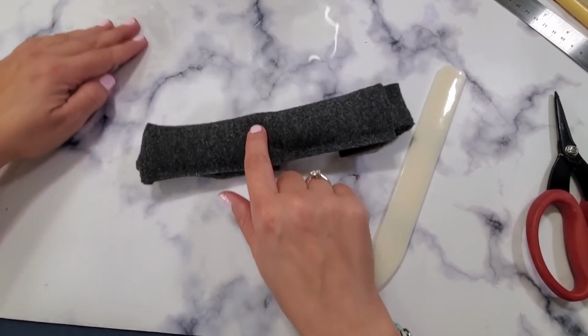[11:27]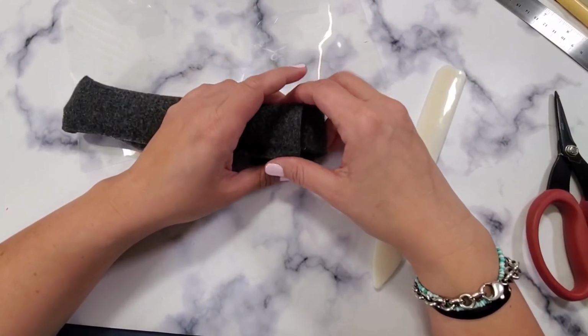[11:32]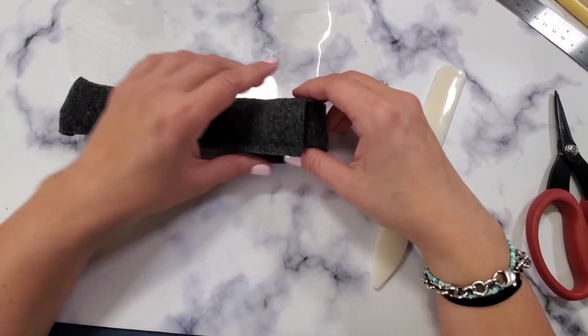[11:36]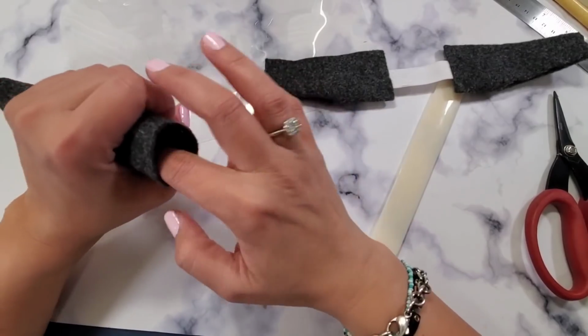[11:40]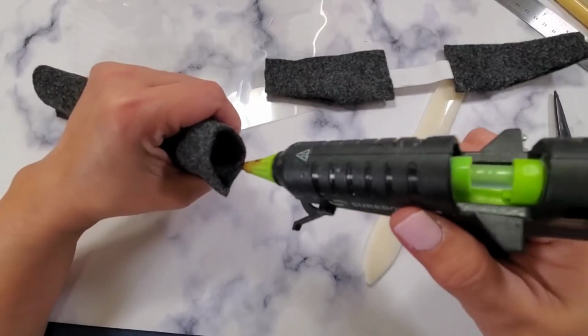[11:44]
So now let me move you a little bit higher so you can see what I'm doing. So this is the side with the fluff inside. So you can see. Okay. So our goal is to insert this here and glue it, and then turn it around and insert it here, because this is the part that's going to be attached to your laminated acetate, which is this one. It's not going to be very pretty, but you can just cover the glue marks. I don't think it matters at this point. I am just covering mine with washi tape.
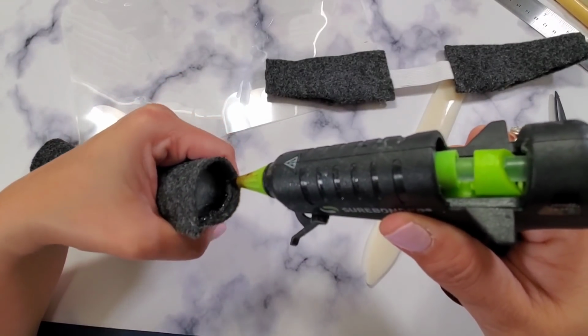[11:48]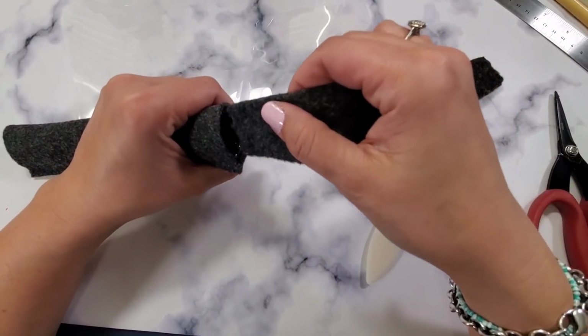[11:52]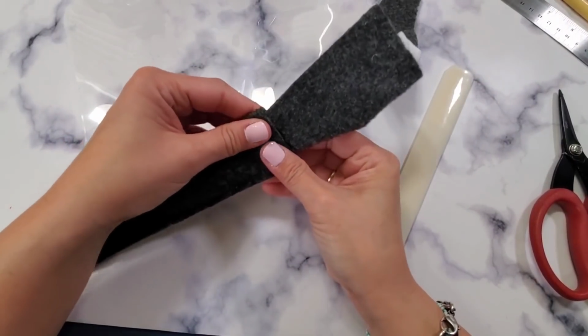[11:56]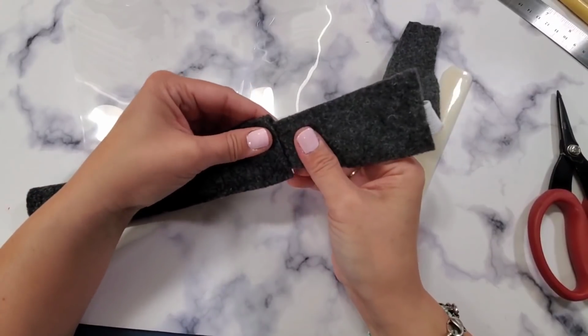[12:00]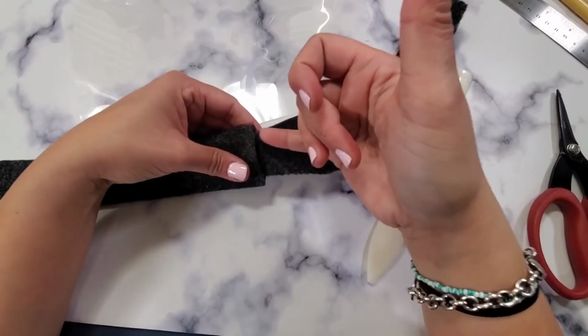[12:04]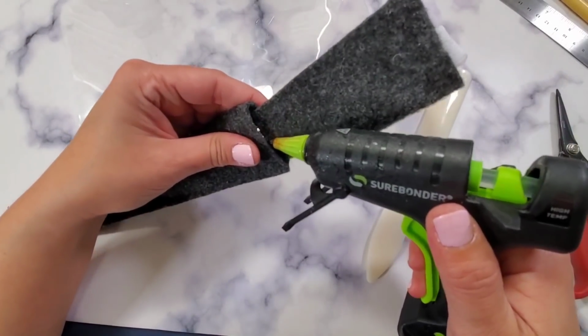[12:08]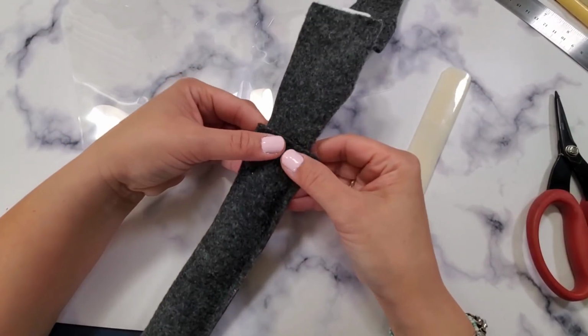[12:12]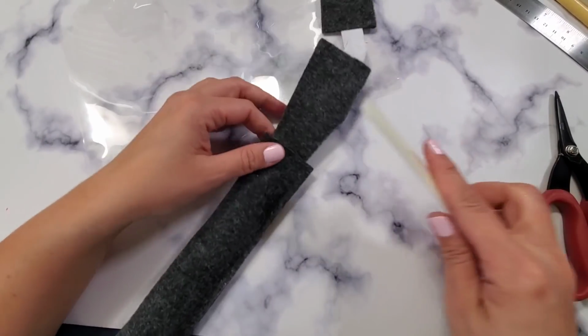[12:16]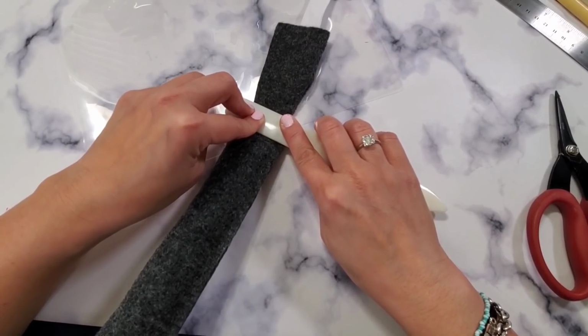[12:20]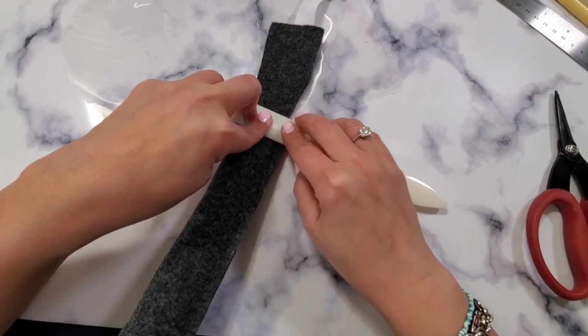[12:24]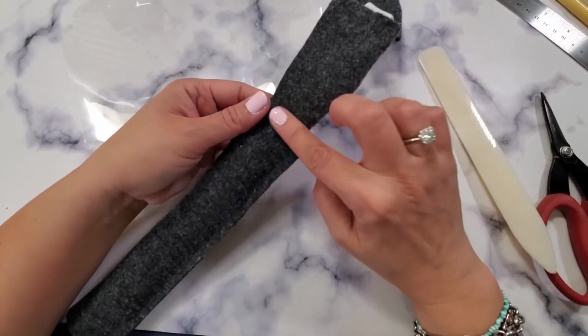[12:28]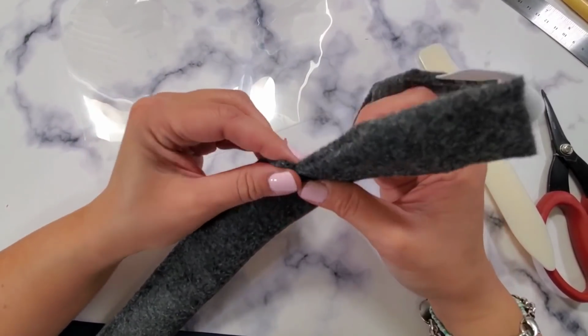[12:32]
So now I'm putting a generous amount of glue right there, and then I'm going to insert it just like that and push it. So just pushing it just so it adheres. And then you're going to put another layer on top here. And make sure you put a generous amount and hold it in place just so it doesn't come apart while it's drying. Just hold it for maybe 10 seconds and it's going to help. Right there. Then you check it and see.
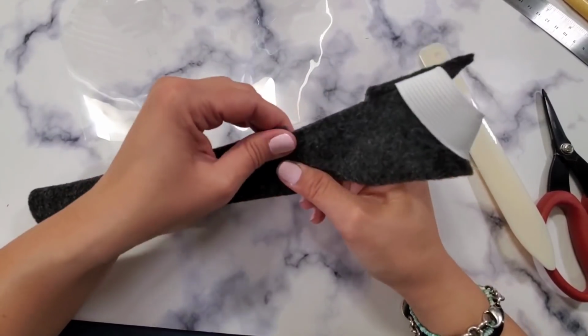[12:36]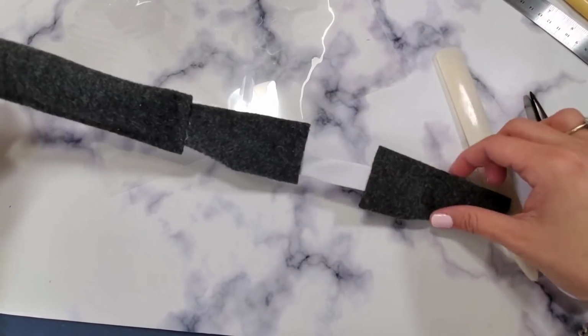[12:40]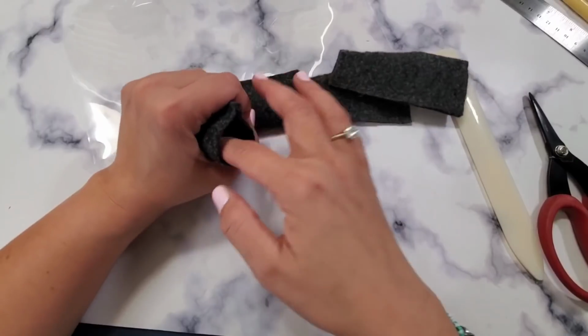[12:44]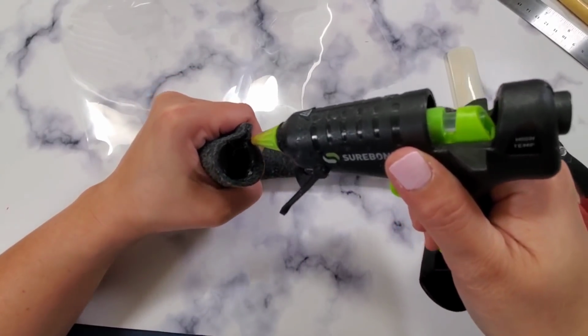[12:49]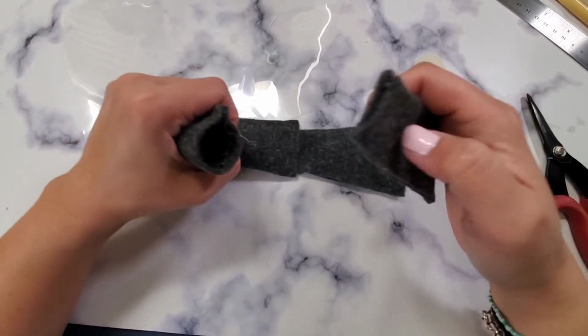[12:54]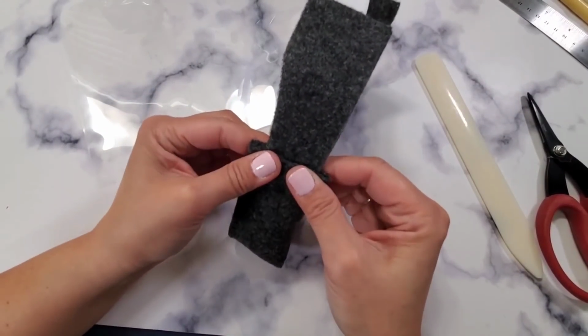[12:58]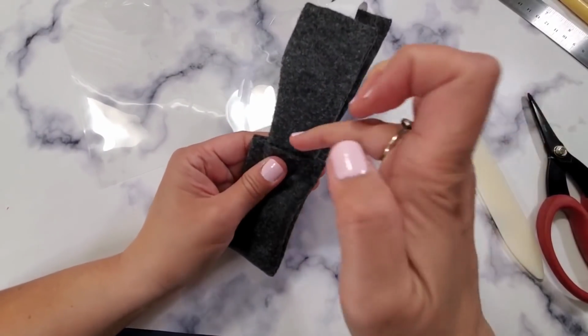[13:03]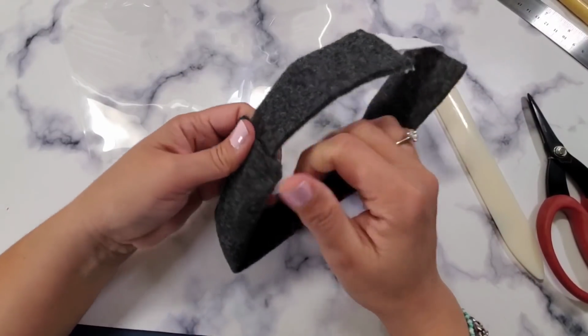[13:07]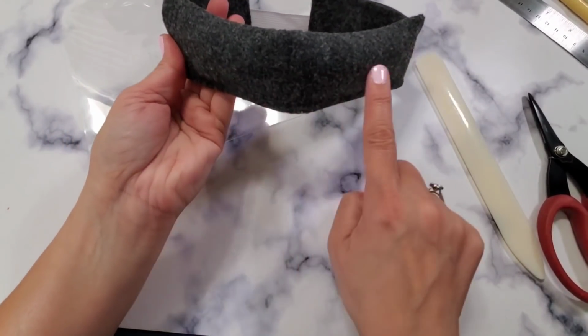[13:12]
And then this goes on this side. So do the exact same thing. Put a generous amount of glue right there because your other side is going to attach to here. And then press it just so it adheres. And then you're going to put another layer of glue here. And then you close this. So pretty much you're making like a headband-ish type. But you're going to put glue right here and then you attach your acetate.
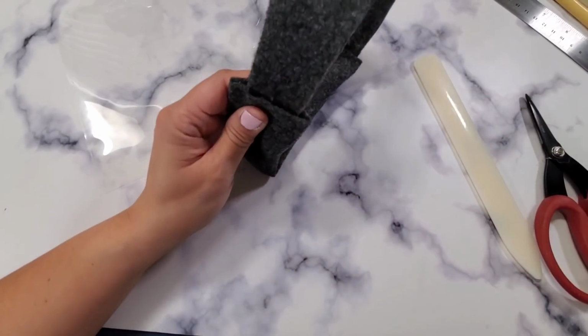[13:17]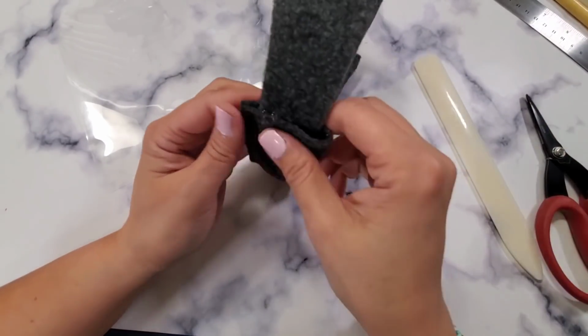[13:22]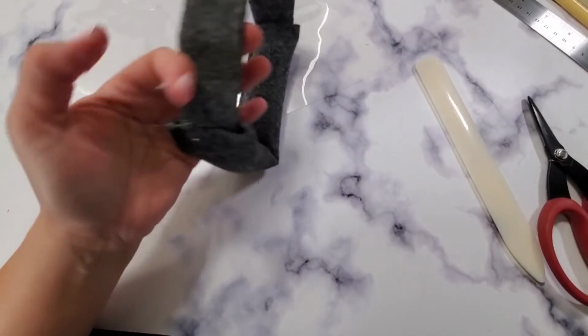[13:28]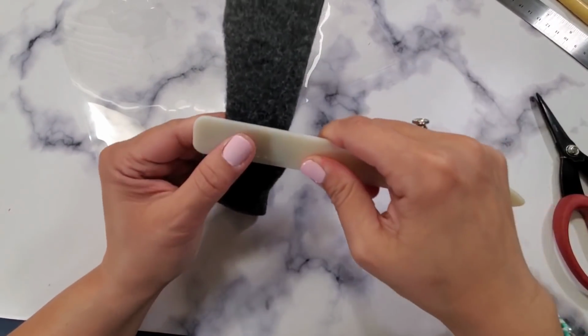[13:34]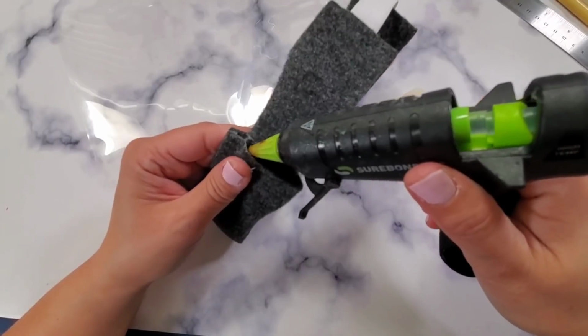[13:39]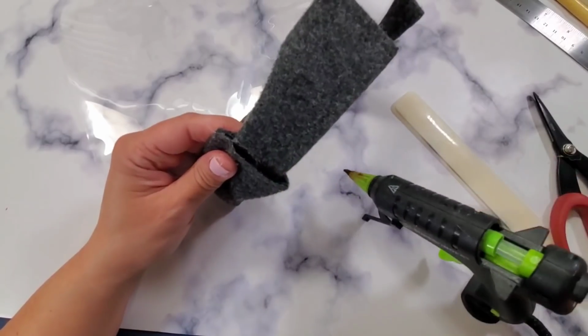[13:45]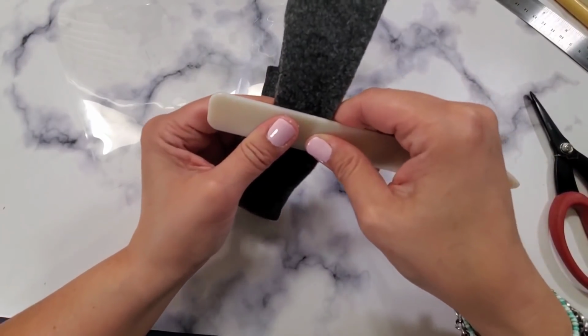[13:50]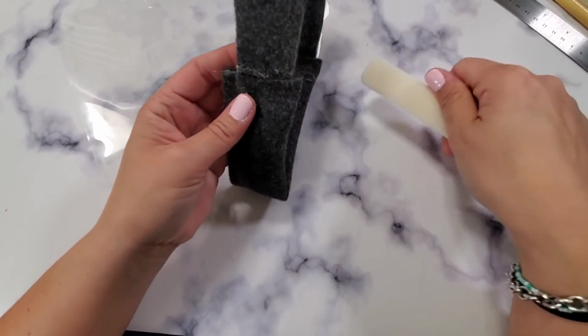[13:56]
So you're just pretty much making the base at this point. So put a generous amount. You're going to use a lot of glue sticks. So sometimes it doesn't adhere, sometimes it does. So just be patient with it. Just be patient because, you know, we're going to need this. We're going to need this as part of our PPE. So just be patient, guys. I know.
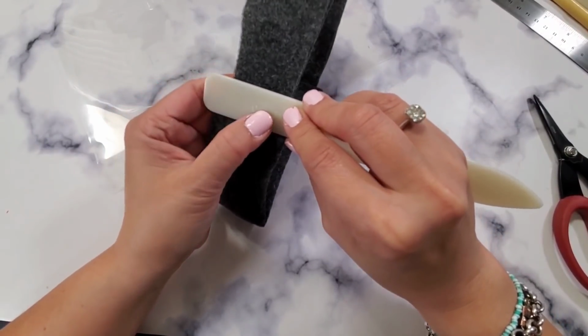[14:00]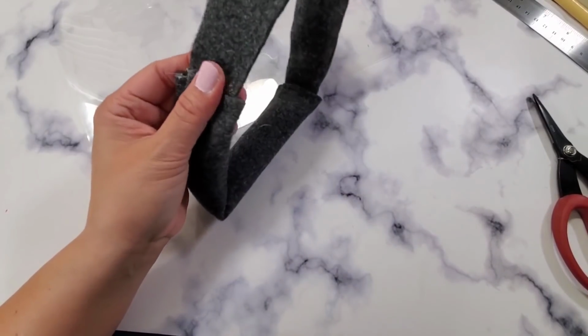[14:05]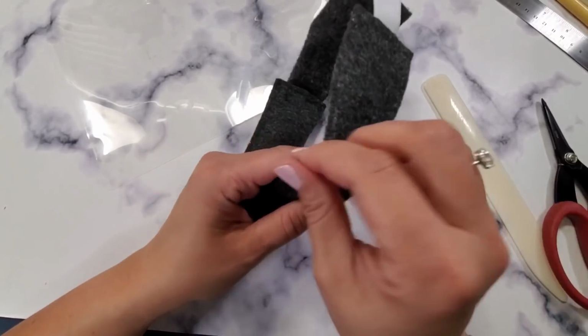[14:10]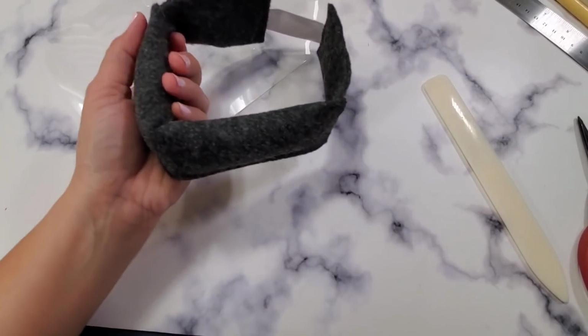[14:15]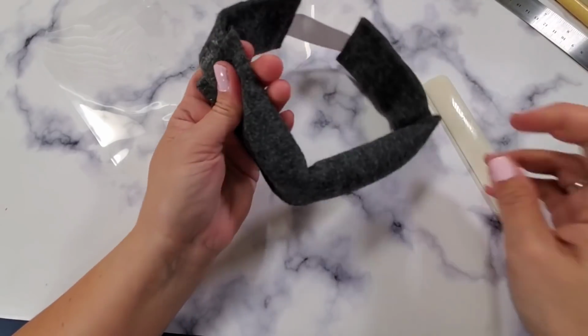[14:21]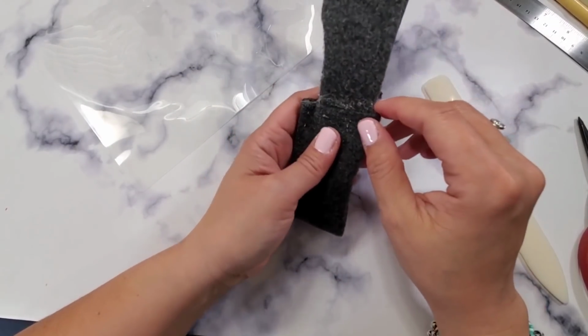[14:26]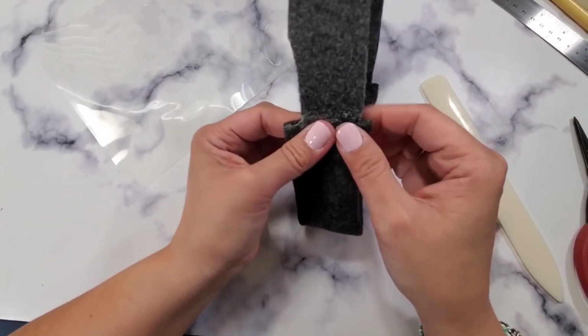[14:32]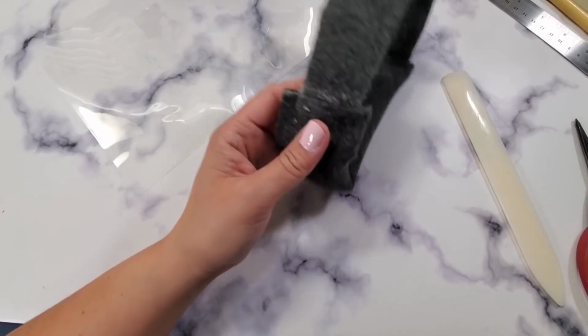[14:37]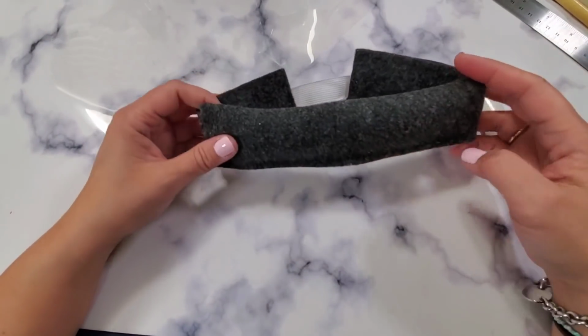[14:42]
So yes, I think that's attached. If you are not a healthcare professional and you want to volunteer and make this for your local hospital, I'm sure they will appreciate it once they run out of face shields. If you have access to a working sewing machine, unlike me, you can sew this, which is easier. But mine stopped working just last night, so this tutorial will be using just a plain glue gun.
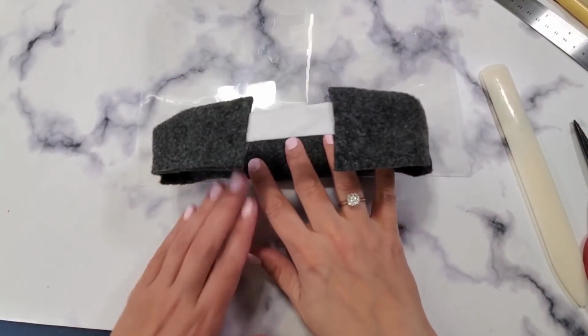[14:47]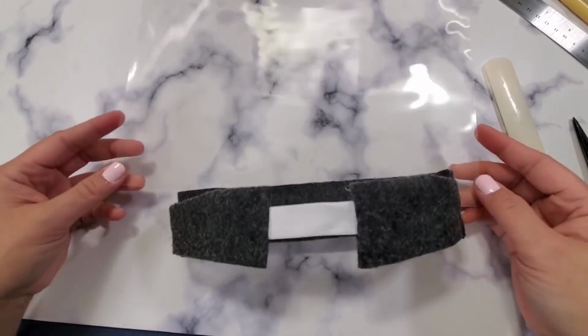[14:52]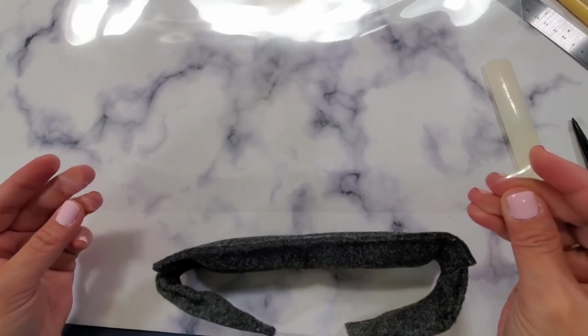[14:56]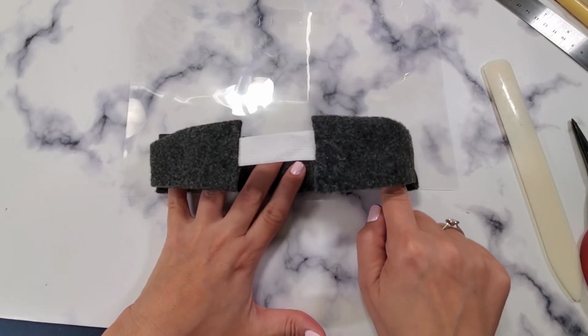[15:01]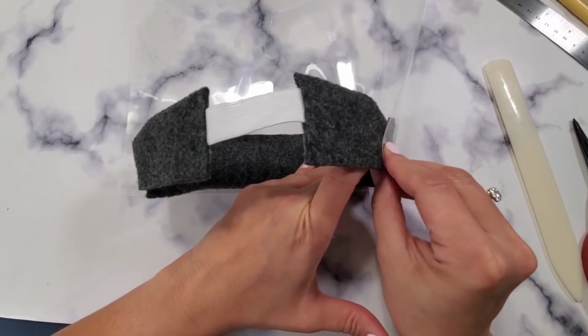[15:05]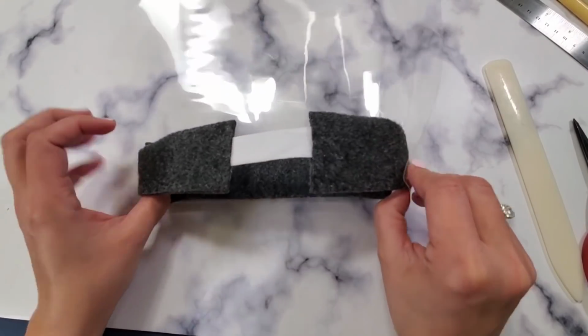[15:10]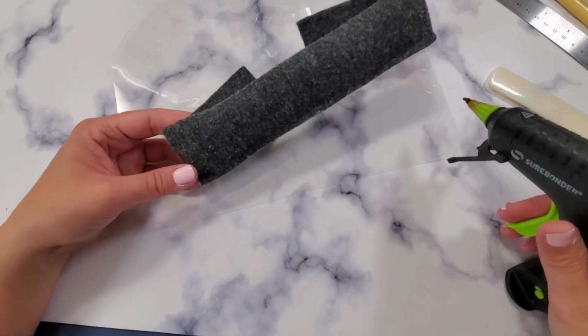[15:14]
And now we are ready to attach this. So you approximate the middle. You're going to notice this is my acetate. I know it's hard to see, but these are the sides of the acetate. I'm just going to put it on center, and then you're going to attach it up to there using your glue gun. So I'm just putting massive amounts and just being patient with it.
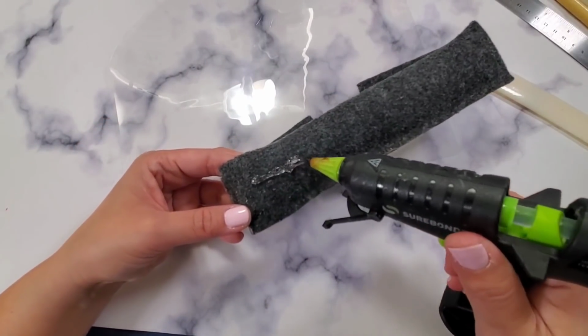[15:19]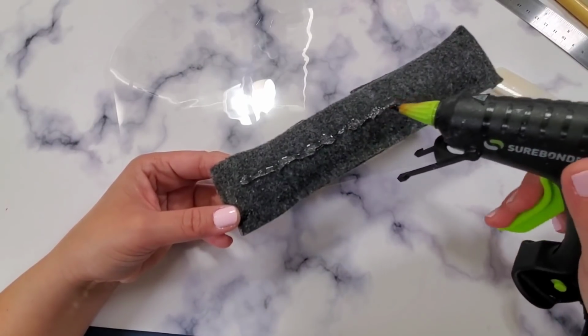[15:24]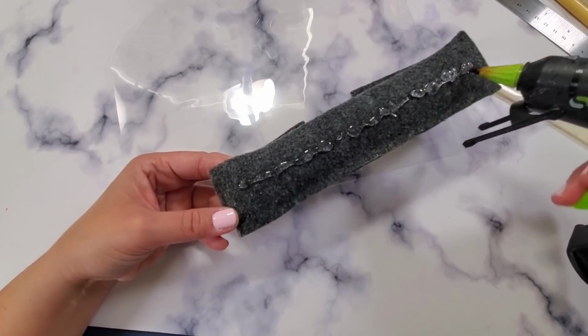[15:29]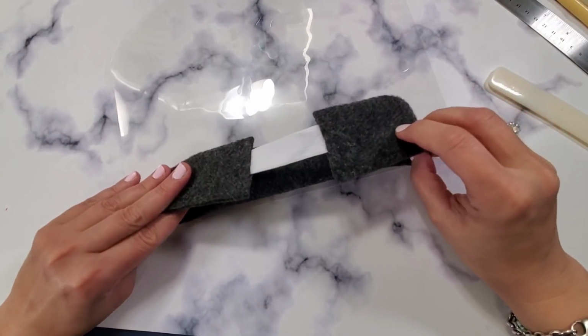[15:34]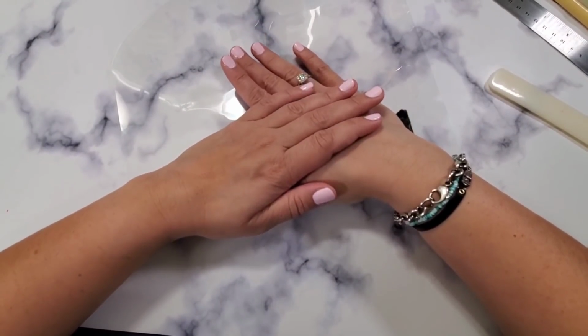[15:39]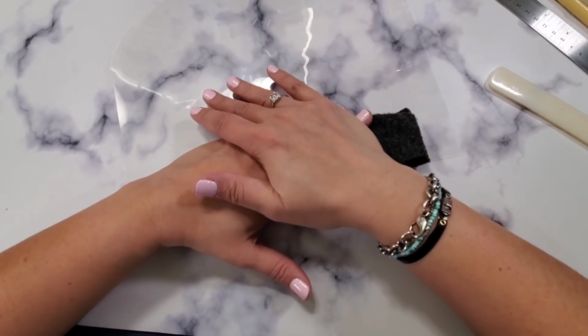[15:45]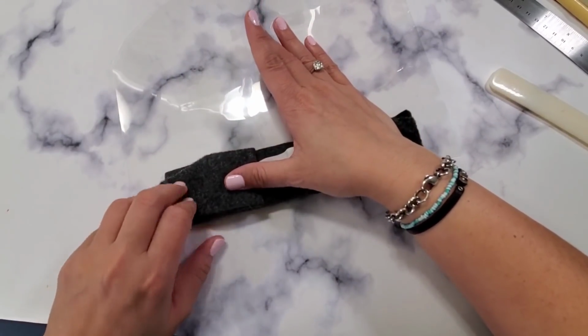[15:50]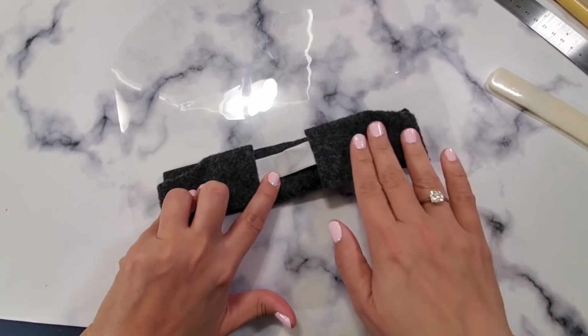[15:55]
Just be patient. It's not going to adhere that quick because this kind of wool felt is hard to attach, but it's okay. We're going to make do with what we have. So I'm just pressing it and being patient with it. Once you've got the center attached, then you can start curving your acetate. I've made about 10 of these, so I know it takes a lot of patience.
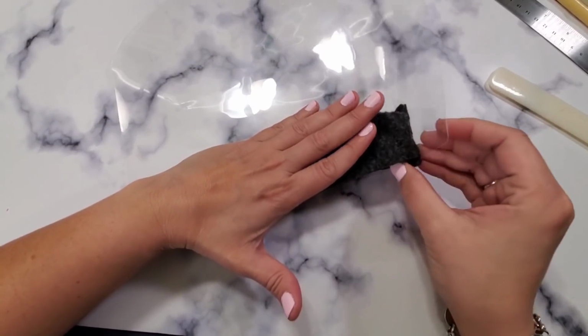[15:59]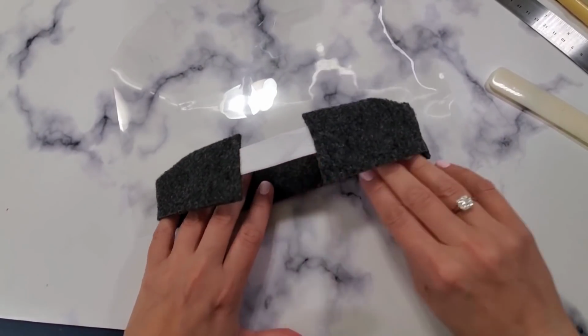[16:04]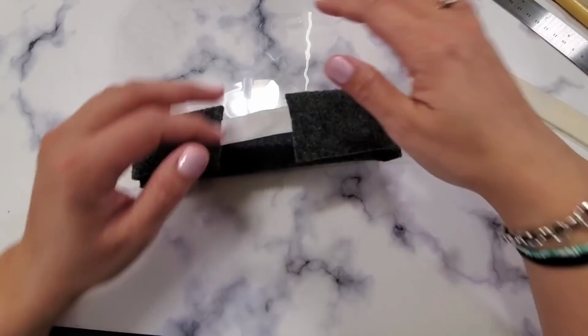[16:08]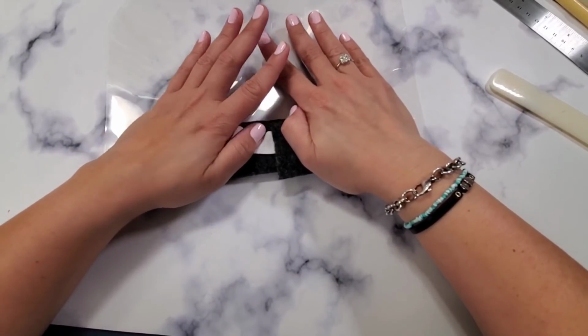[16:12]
Then you have to look once it's dry. So just be patient. I know it takes a while to dry, but just be patient. Watch some Netflix. I'm glad the internet is still alive.
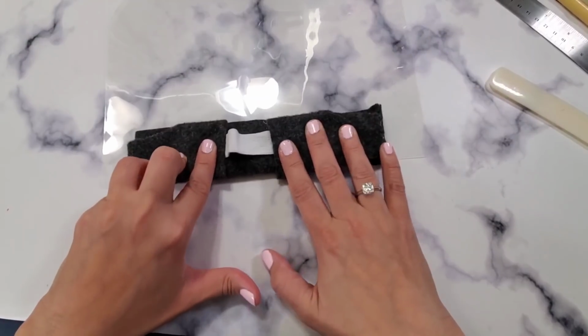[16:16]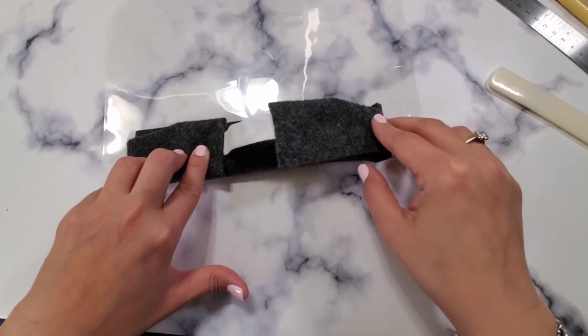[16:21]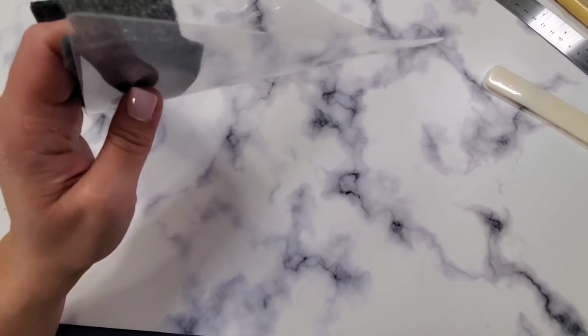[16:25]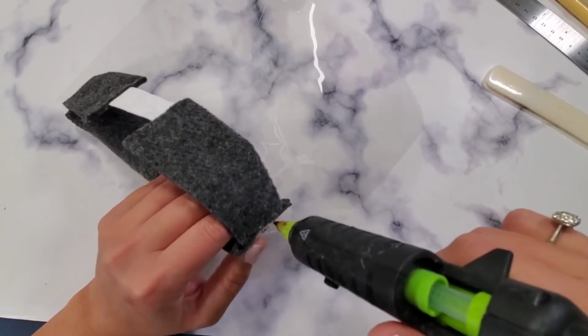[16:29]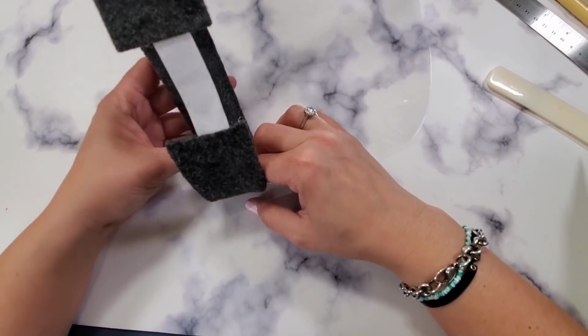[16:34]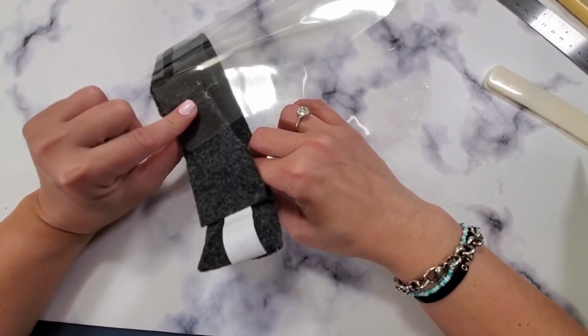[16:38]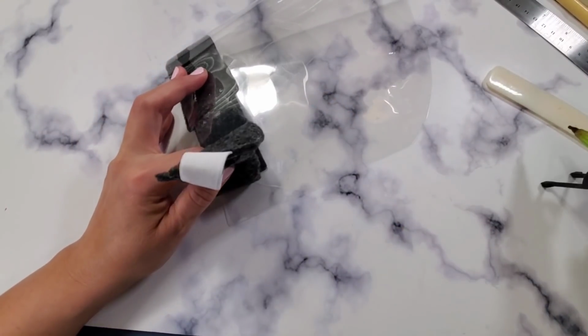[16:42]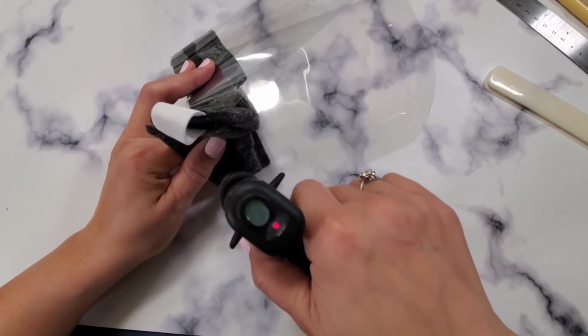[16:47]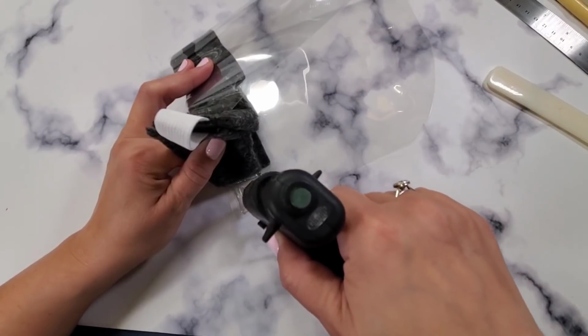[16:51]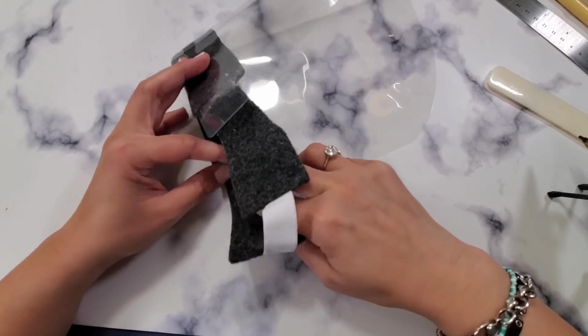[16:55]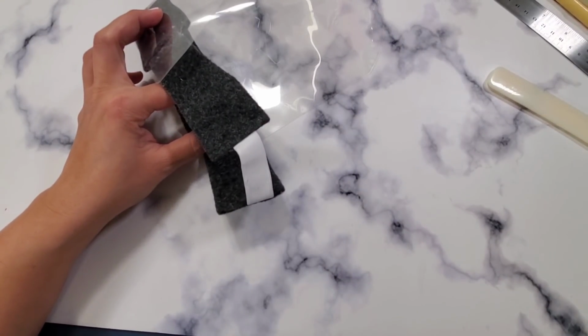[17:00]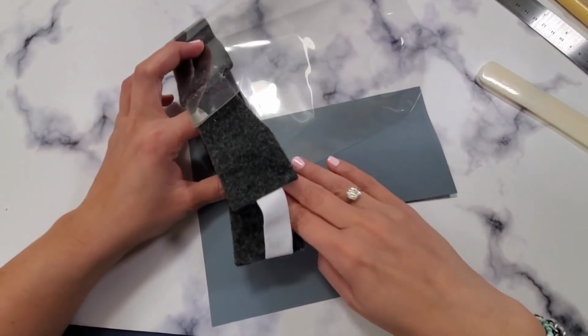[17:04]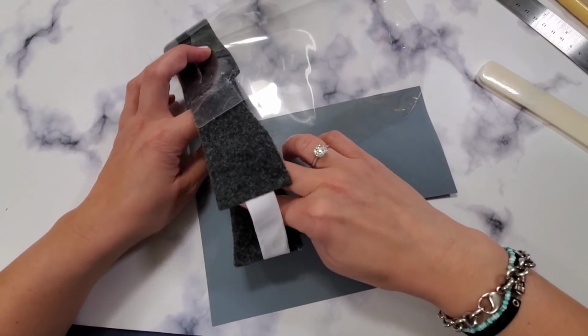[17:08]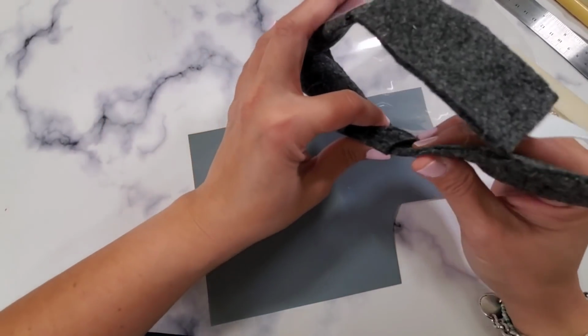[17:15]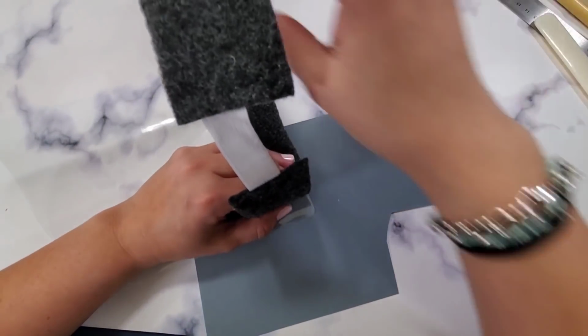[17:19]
And guys, I know that we cannot travel. If you are parents and you have your kids with you, there is this website called museum.zen that you might want to try, because you can have virtual reality access to all the museums in the world. Me and my husband are trying to put together some educational things for our 2 kids. I haven't tried it yet, but somebody told me about museum.zen, and you can access all the museums in the world so that you can kind of virtually travel.
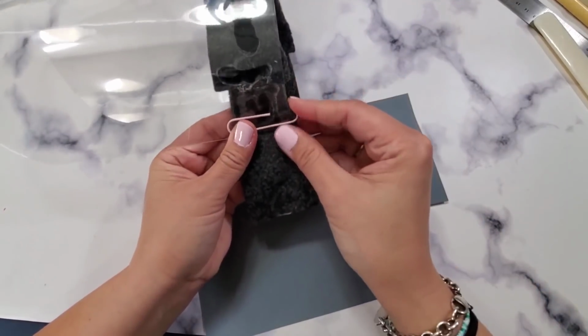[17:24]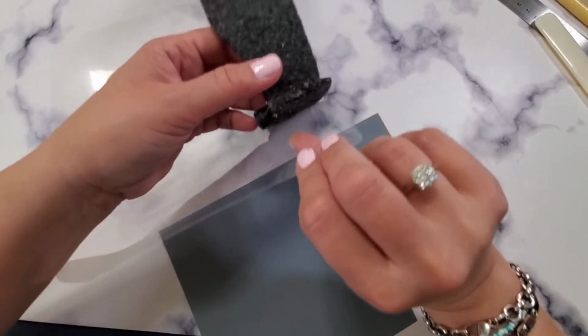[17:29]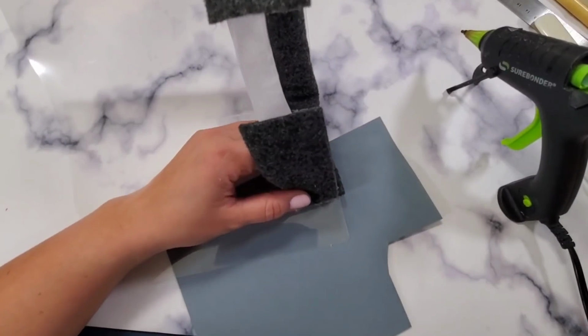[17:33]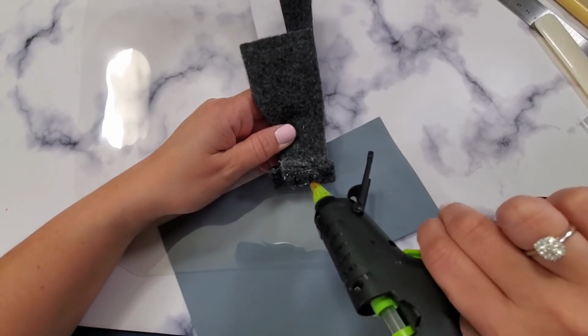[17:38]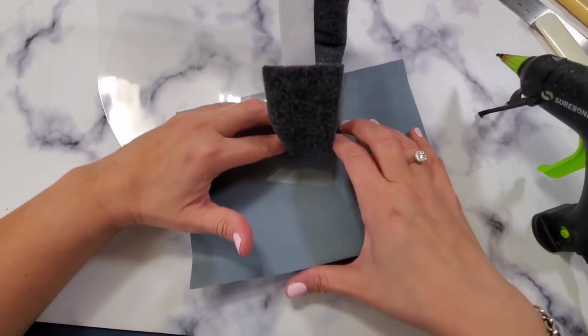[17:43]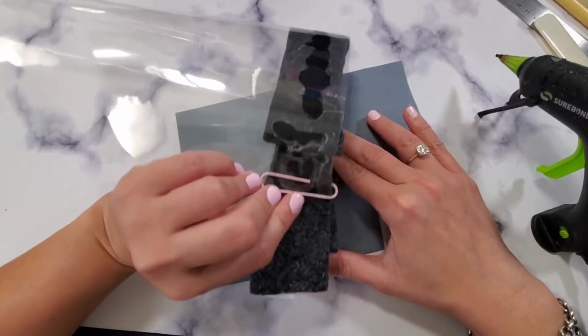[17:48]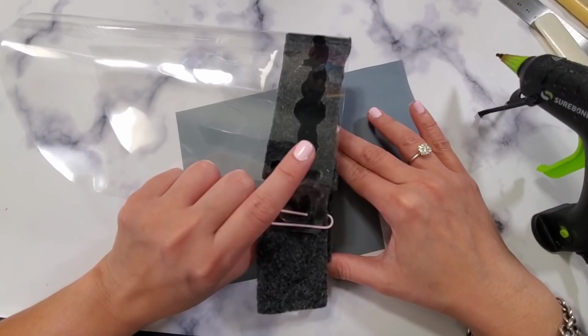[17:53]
And then I use a paper clip just to hold it together. And then I'm going to take a look at where I am right there. You need a lot of glue sticks on this one, guys. So I'm just putting more glue. Just being patient. It's okay. It doesn't look amazing. That's why you can cover this with washi tape. But when it comes to functionality, it totally works.
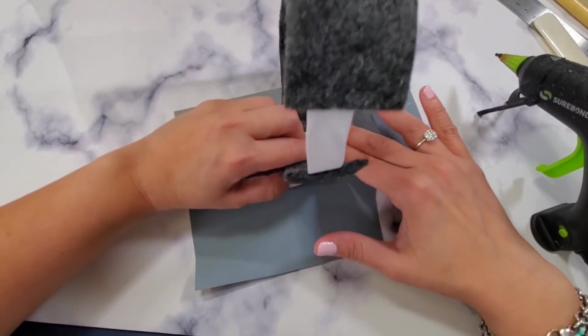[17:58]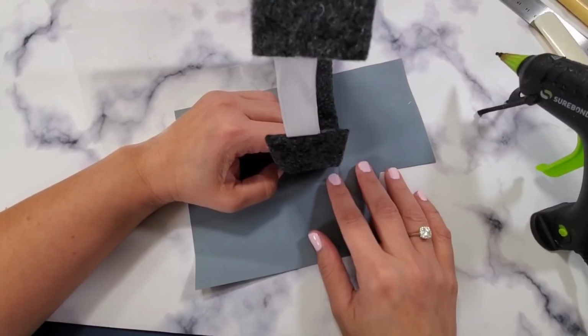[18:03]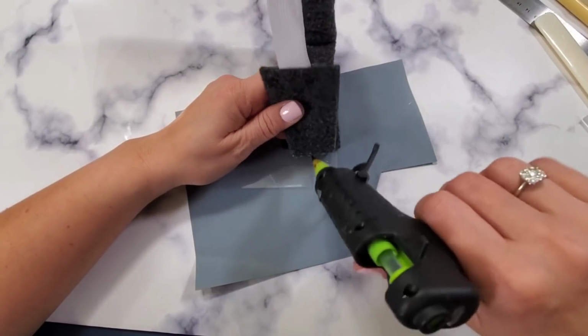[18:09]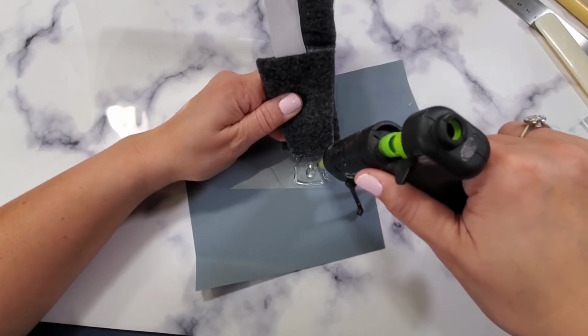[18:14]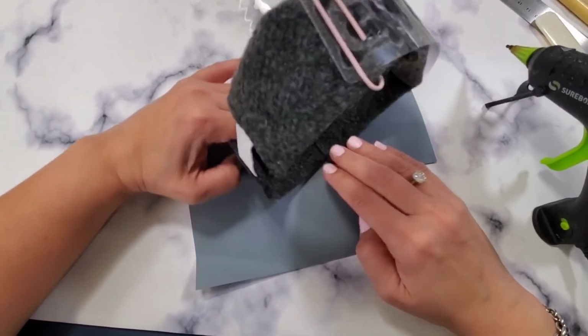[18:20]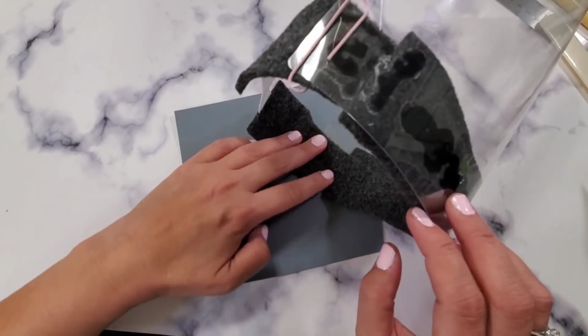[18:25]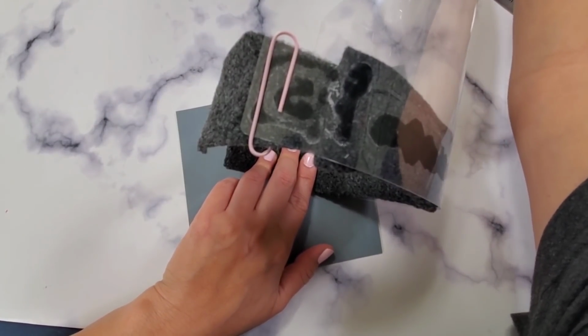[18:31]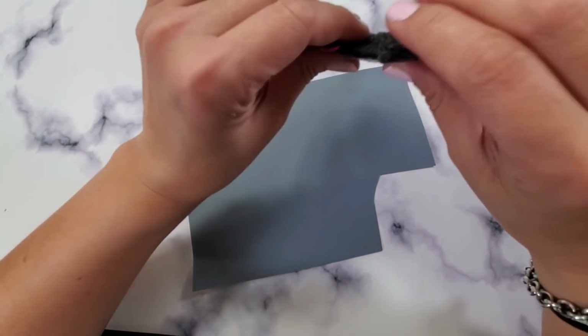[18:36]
Another side note, make sure you measure your head before you start doing it, because the 9 is the measurement for my head. So make sure that you measure your head before you start creating, because it has to fit your mask. So right there, I'm just being patient and I'm holding it. I hope you can see that. Holding it right there. And then I'm going to get another paper clip so that it stays in place.
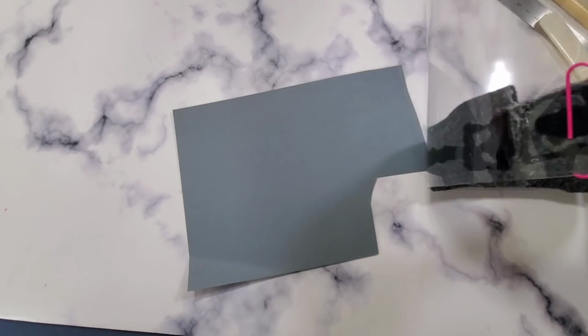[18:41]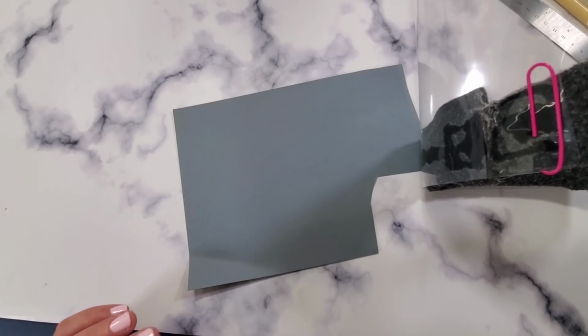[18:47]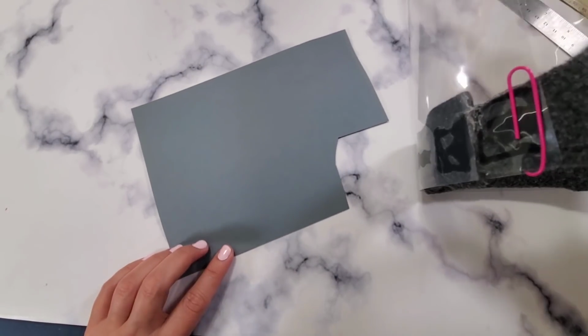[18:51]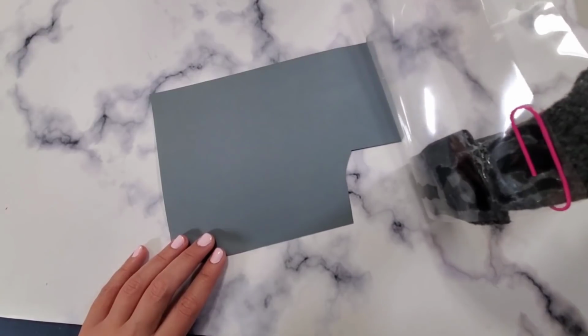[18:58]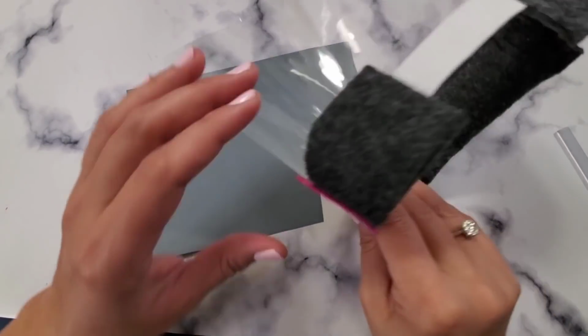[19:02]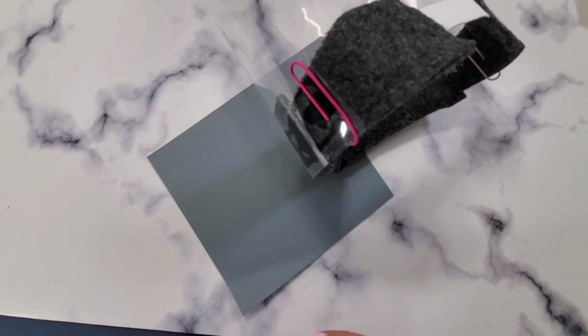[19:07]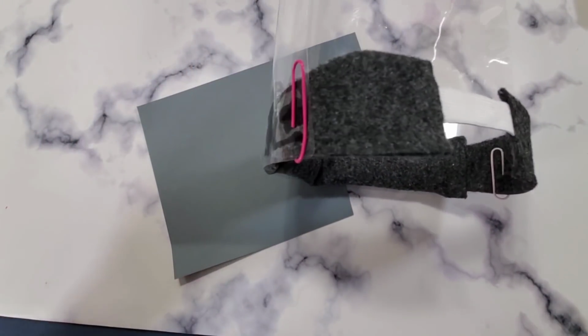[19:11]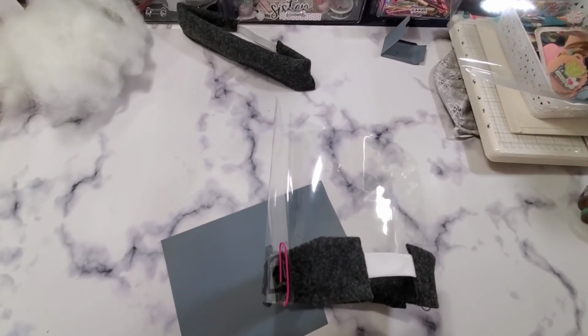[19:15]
I am going to try to make a lot more for my people at work, but I thought that if you are running out in your hospital and you want to try to create some face shields for your coworkers, for your local hospital, this video would be very helpful for you. I know it's a long video, but bear with me. Okay, so I'm going to move a little bit farther away. So this is what it actually looks like.
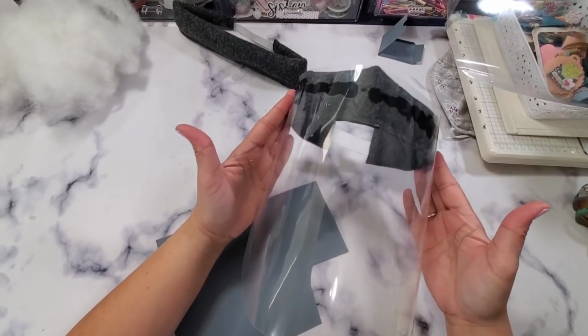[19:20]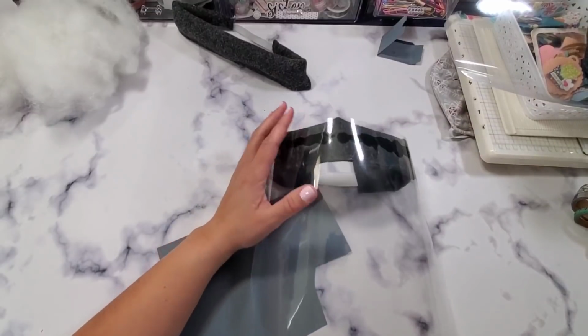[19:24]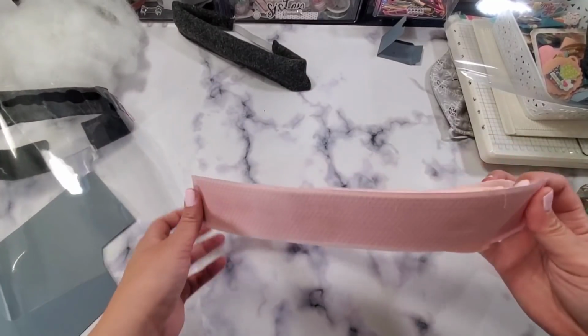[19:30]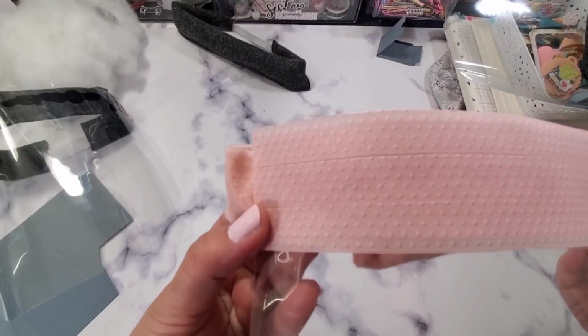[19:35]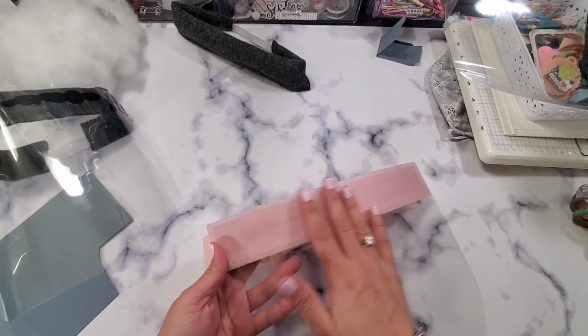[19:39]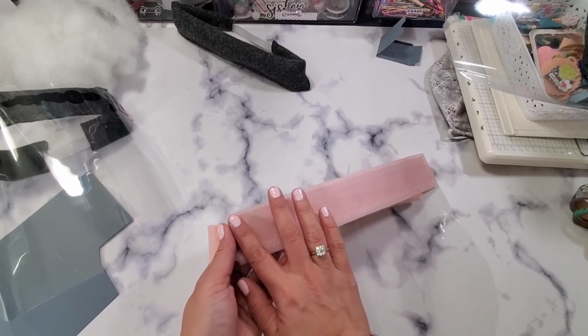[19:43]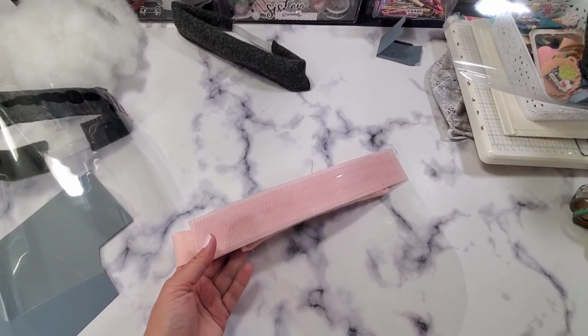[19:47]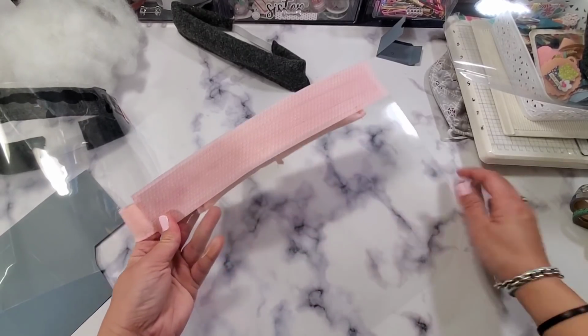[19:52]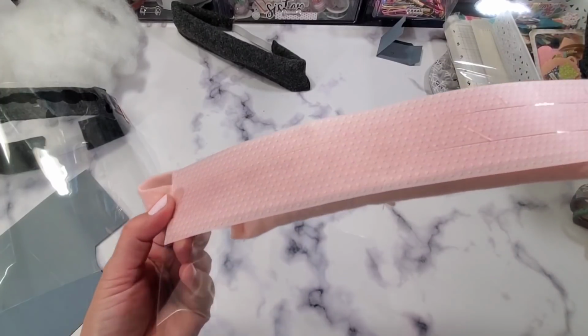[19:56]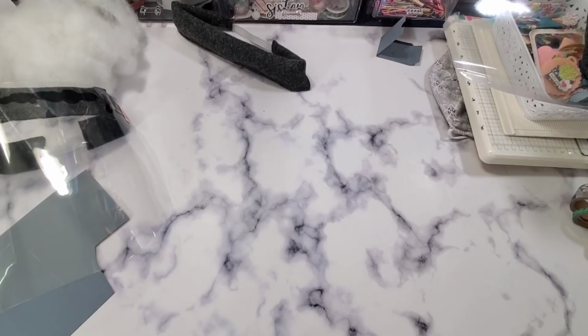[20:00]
It doesn't look the best. You can put washi tape. That's what I did with this one. This is my prototype that I used. This one wasn't the best, but I just used washi tape to cover it, because your healthcare professional will be wiping this, so don't put any kind of paper. Put something that can get wet, like masking tapes or duct tapes that have designs. You can do that, or just plain is good enough. But they're going to be wiping this after every use, after every patient. So that's why you just have to make it bearable to wear. Anyway, I hope that helps.
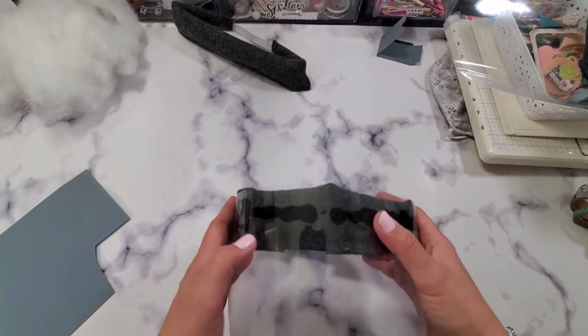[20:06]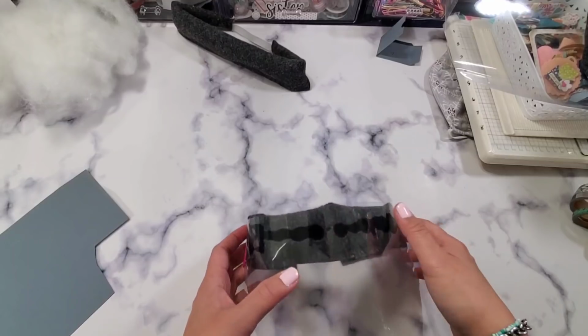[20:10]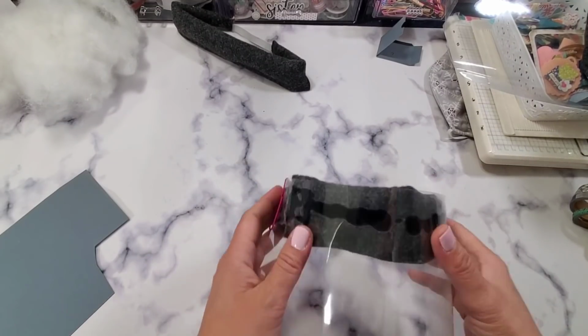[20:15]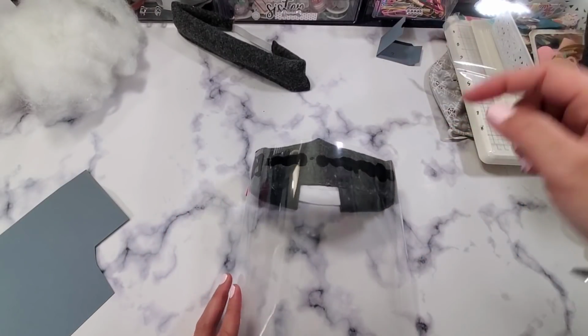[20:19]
Let me know if you have any questions. This is what it looks like. I'm going to be putting washi tape on here just to cover it, but it's going to be done. I'm going to insert a picture right here so you can see what it looks like being worn.